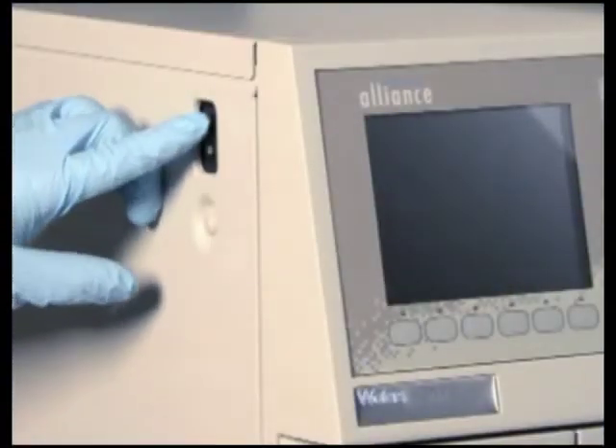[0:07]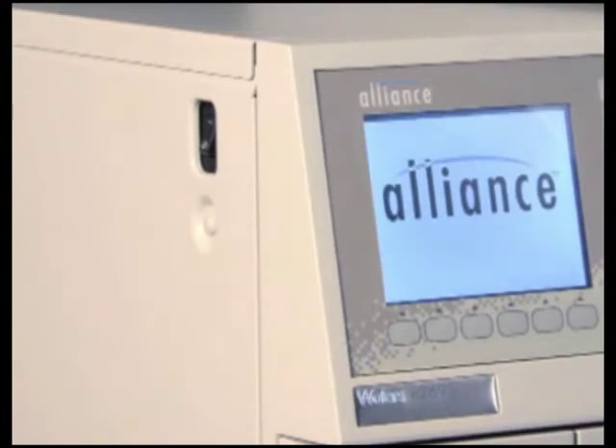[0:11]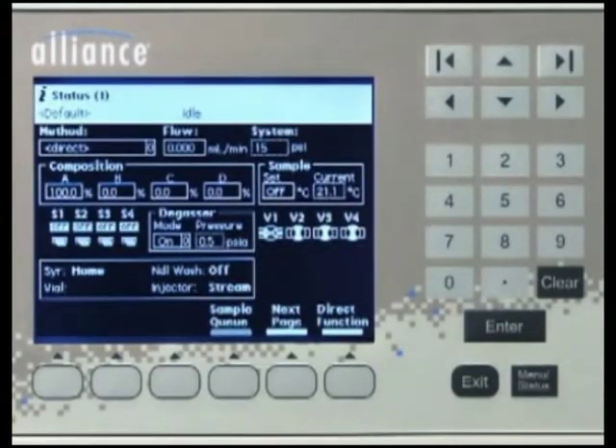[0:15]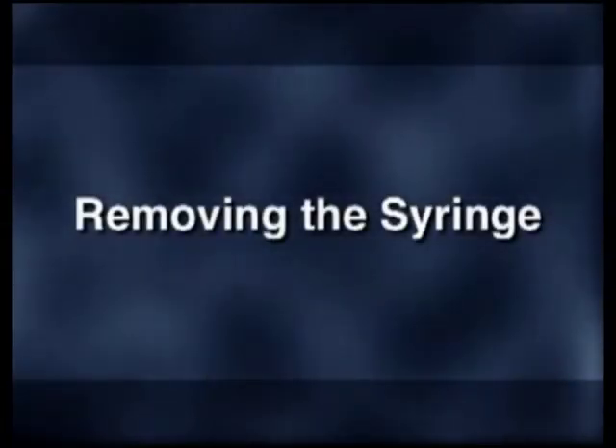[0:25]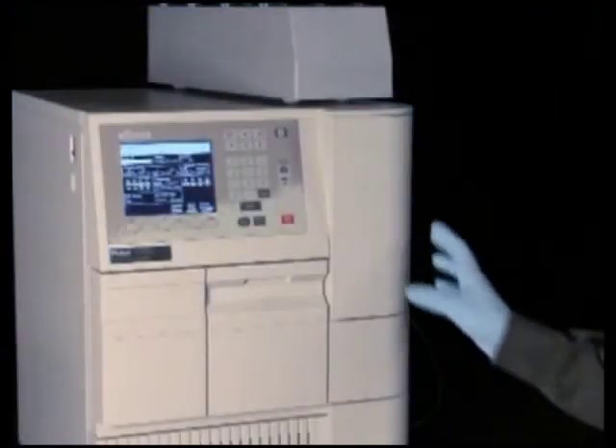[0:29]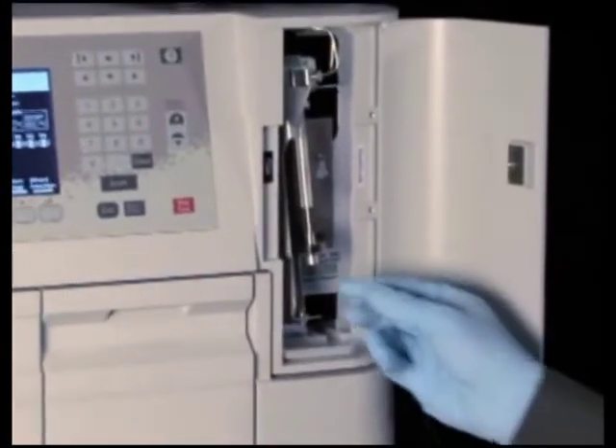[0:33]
Turn the 2695 separations module on. Press the menu status key to access the status screen and check to make sure the solvent flow is off and that there is no back pressure in the system. Open the syringe compartment door. Remove the knurled knob from the end of the syringe plunger.
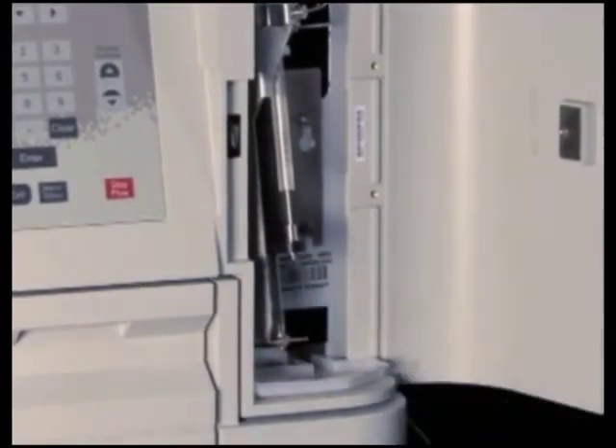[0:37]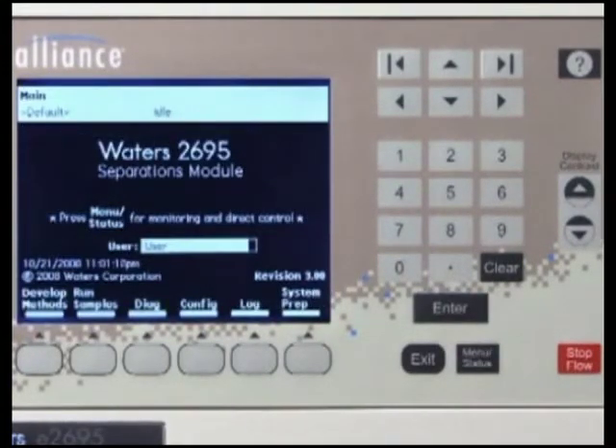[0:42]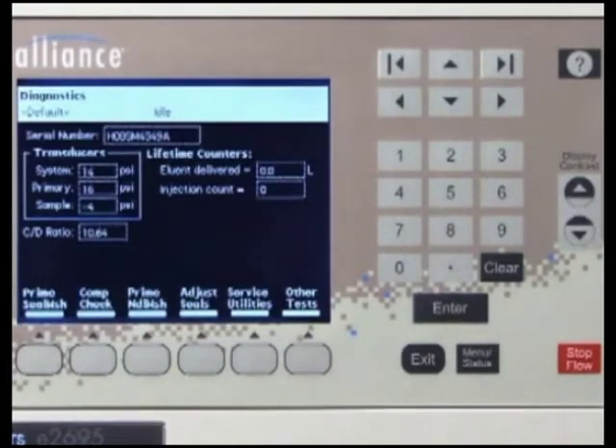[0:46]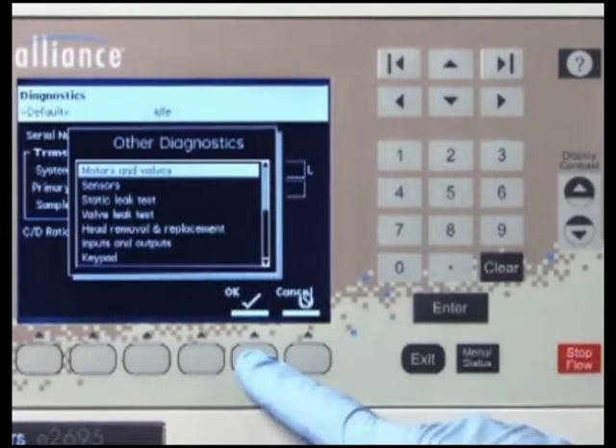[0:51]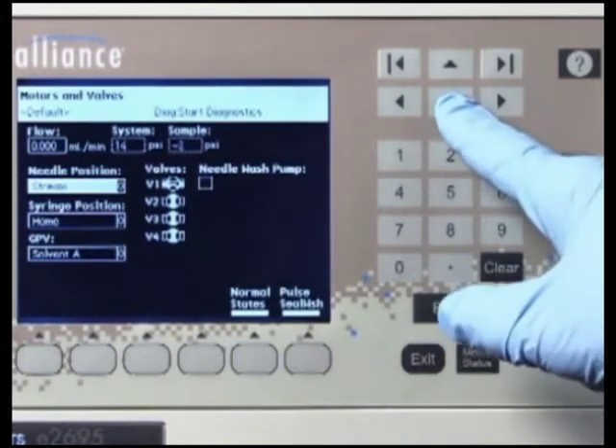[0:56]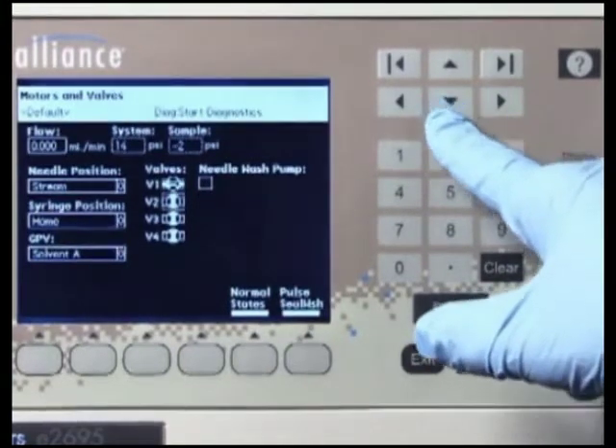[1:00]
Press the menu status key to return to the main menu. Then press the diagnostic screen key. Press the other test screen key and select motors and valves from the list of available tests. Press the arrow keys to select V3. Verify that the V3 valve is open. If it is not, press any numeric key to switch the valve to the open position.
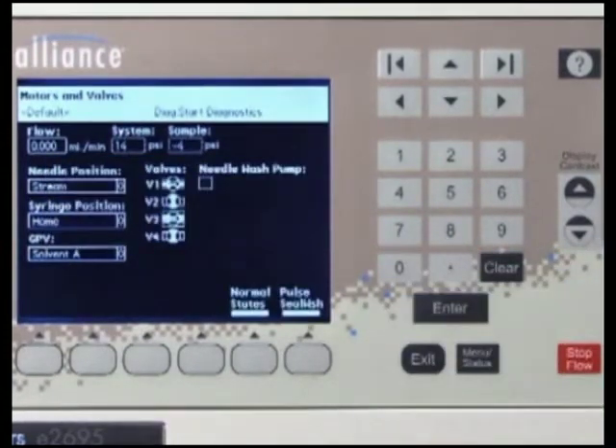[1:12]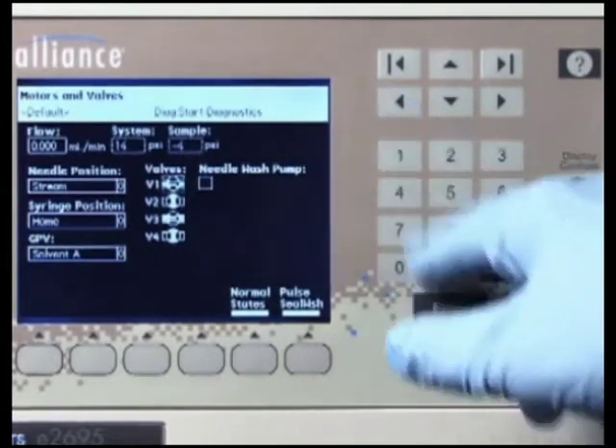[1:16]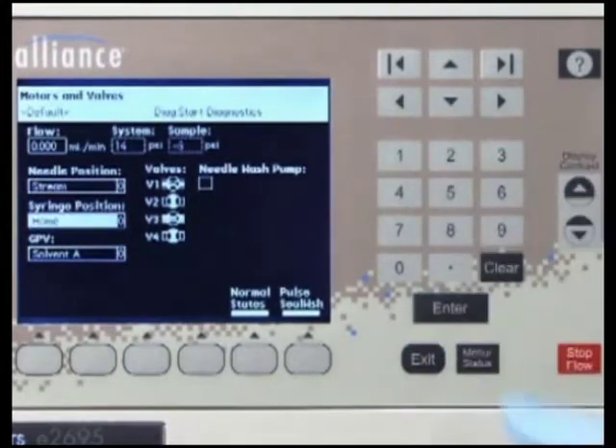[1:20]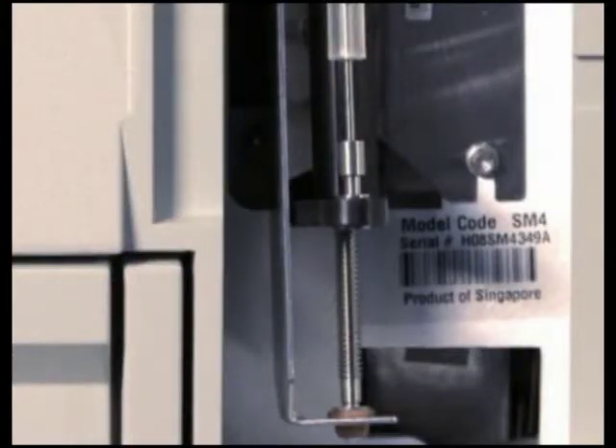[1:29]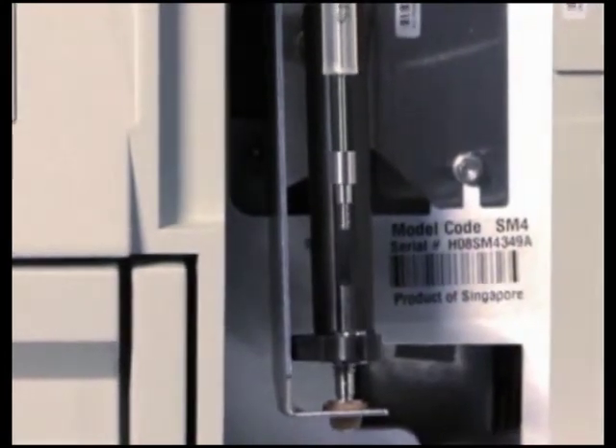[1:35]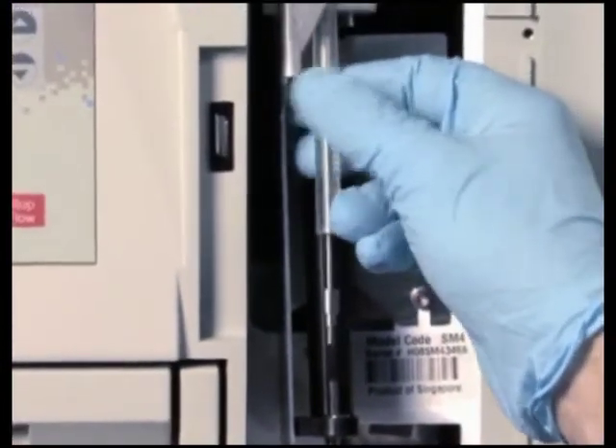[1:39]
Select the syringe position field. Press Enter to display the drop-down list. Select the full field. With the knurled nut removed, the plunger tip remains pointed upward as the mounting bracket is lowered. When the mounting bracket is fully lowered, unscrew the syringe from the syringe drive mounting block and remove the syringe from the compartment.
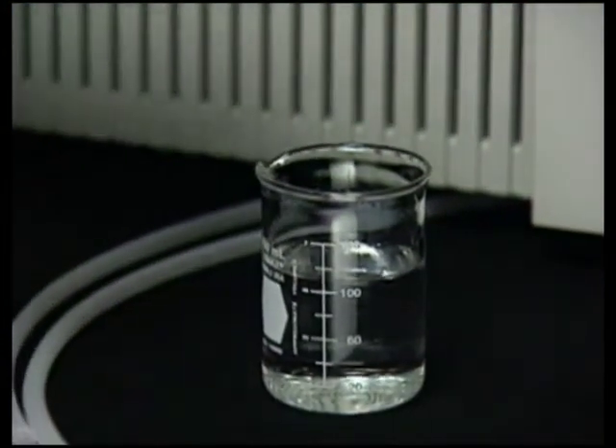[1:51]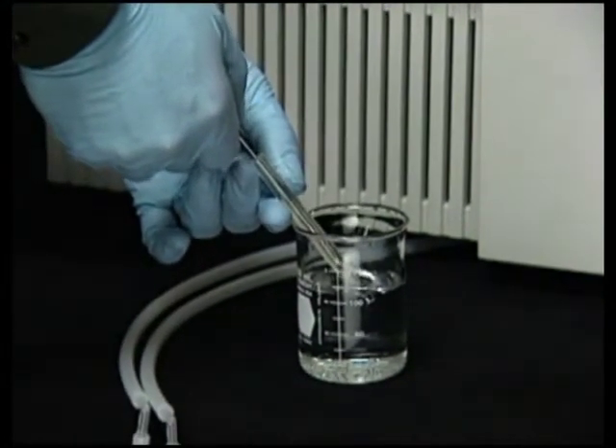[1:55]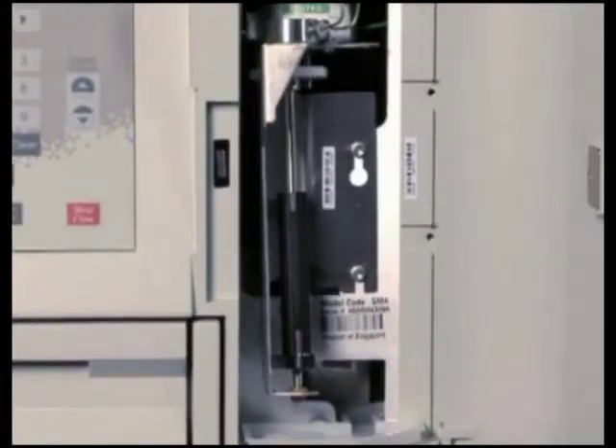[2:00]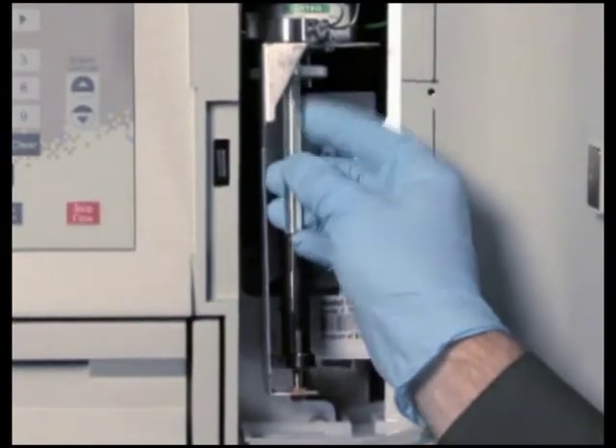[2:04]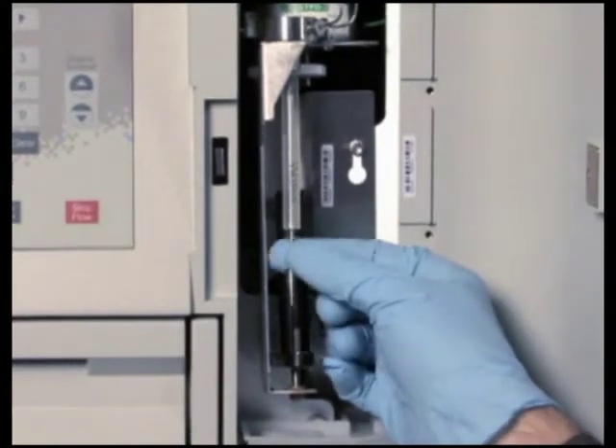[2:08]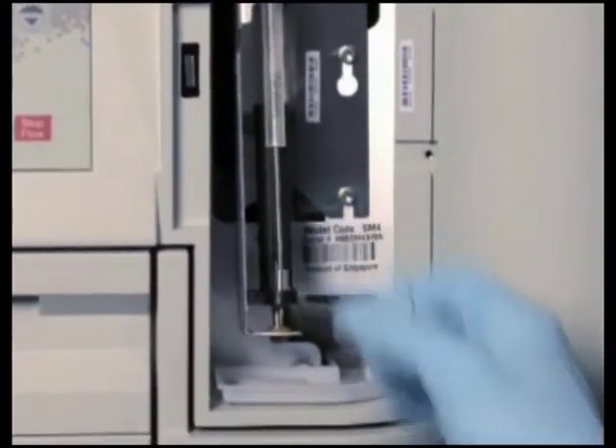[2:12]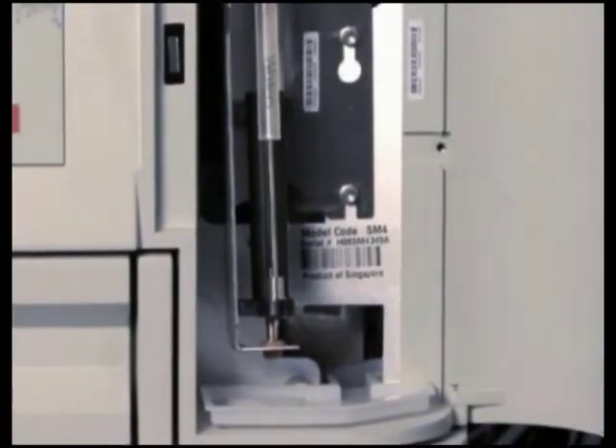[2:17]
Before you insert the syringe into the mounting bracket, partially fill the new syringe with mobile phase to help remove air bubbles. Screw the new syringe partially into the syringe drive mounting block. Do not tighten. Slide the syringe plunger down and insert the end of the plunger through the syringe guide bracket. Now tighten the syringe into the mounting block.
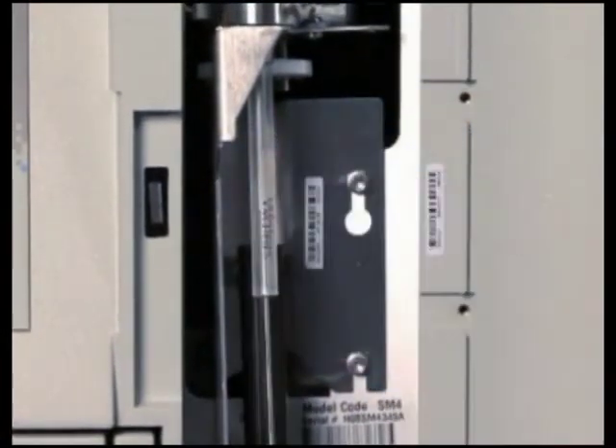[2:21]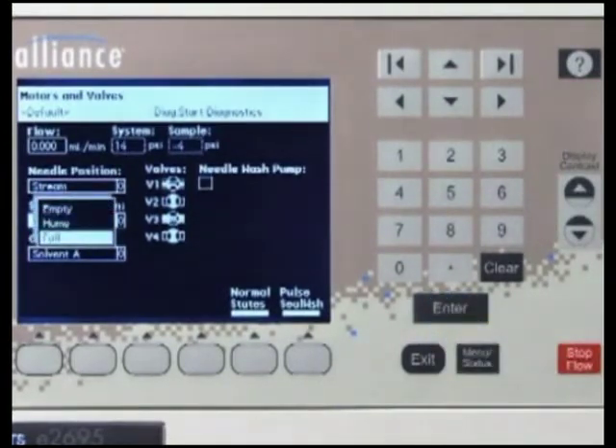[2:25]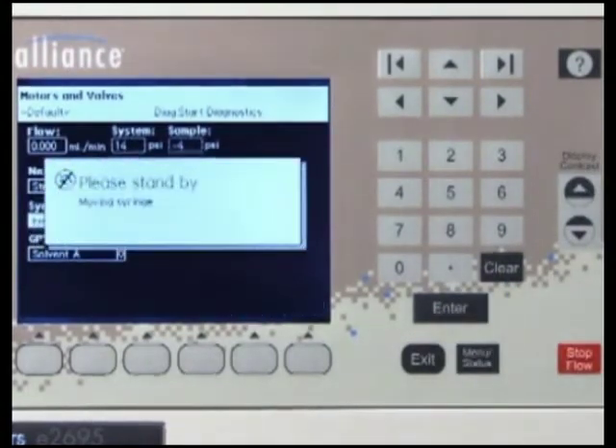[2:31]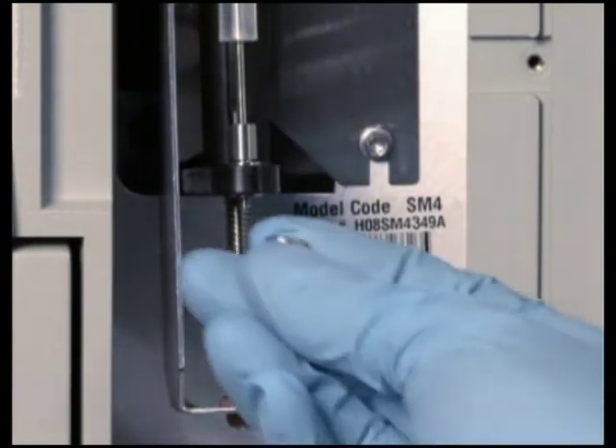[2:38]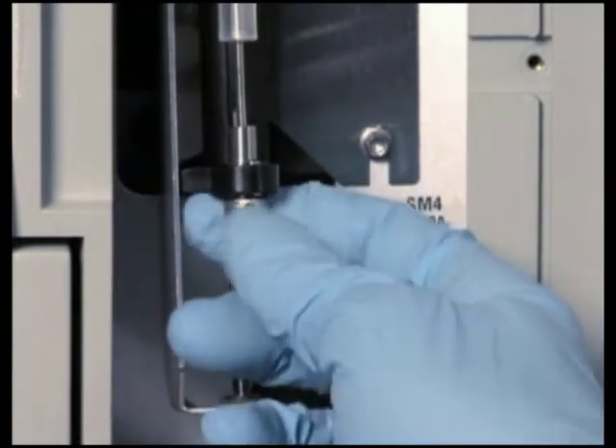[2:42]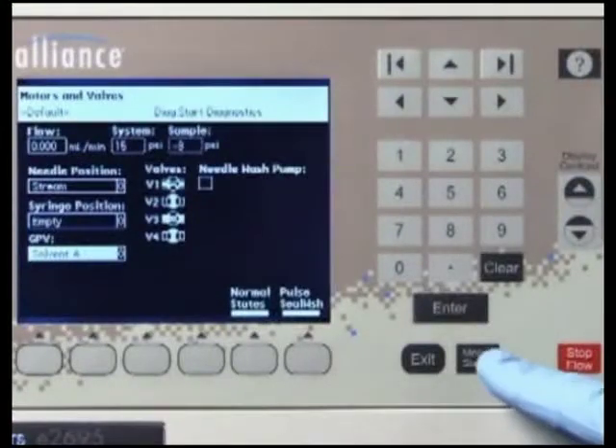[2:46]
In the syringe position field, press Enter to display the drop-down list. Select Empty, and then press Enter. The mounting bracket moves upward so that you can install the knurled nut. Fasten the knurled nut. Press Exit to exit the motors and valve screen to return to normal conditions.
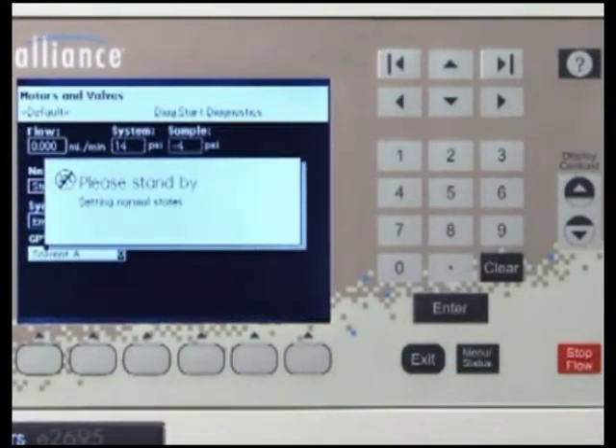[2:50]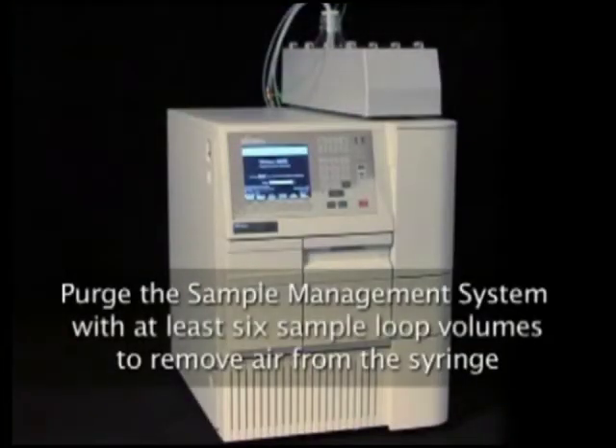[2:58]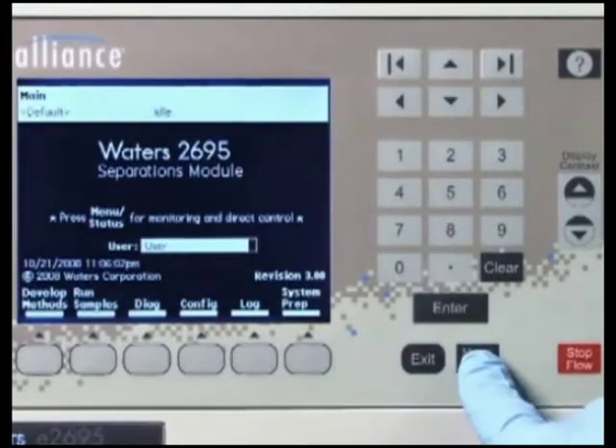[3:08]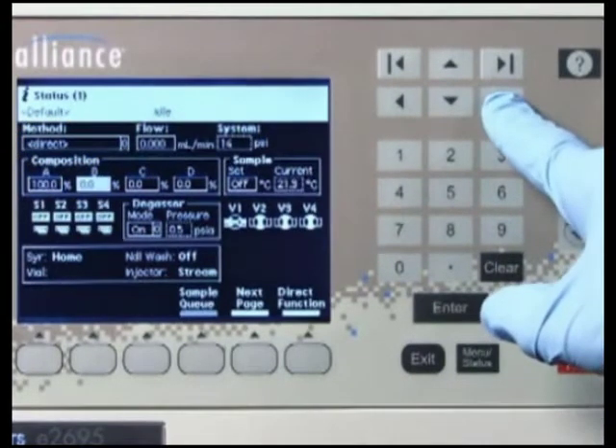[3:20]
Once you have installed a new syringe, purge the sample management system with at least 6 sample loop volumes to remove any bubbles that may exist in the system. To perform the purge, press the menu status key to display the status screen. Then verify that Direct appears in the method field. Set the pump to deliver 1 milliliter per minute of 100% degassed mobile phase.
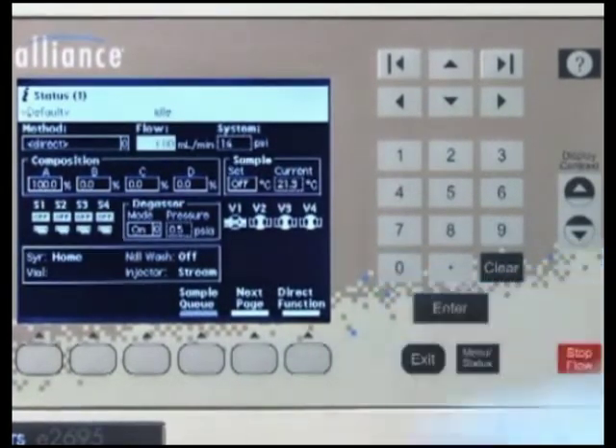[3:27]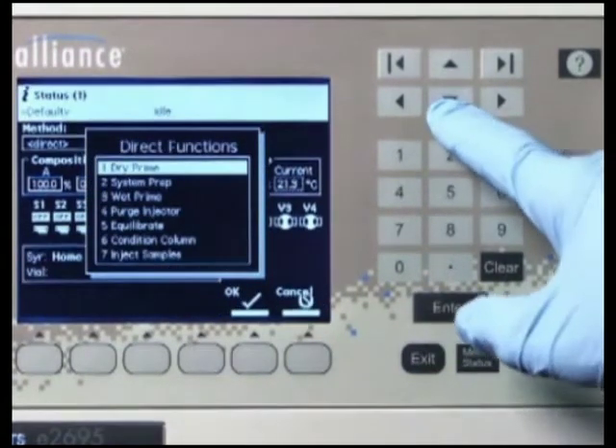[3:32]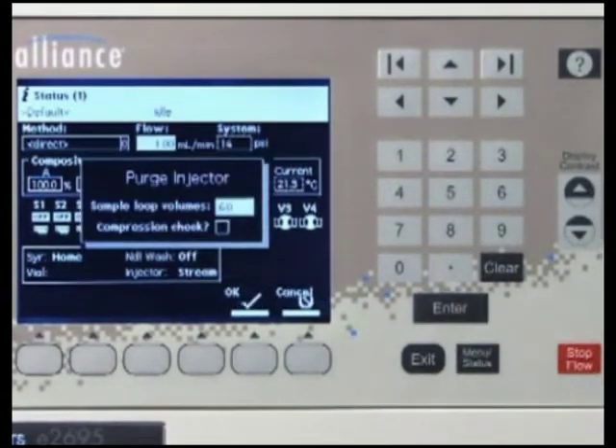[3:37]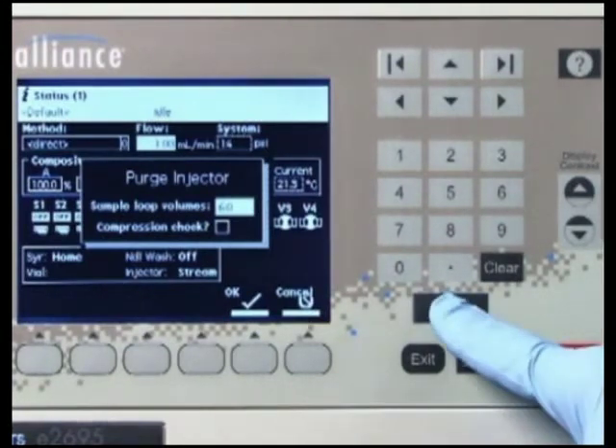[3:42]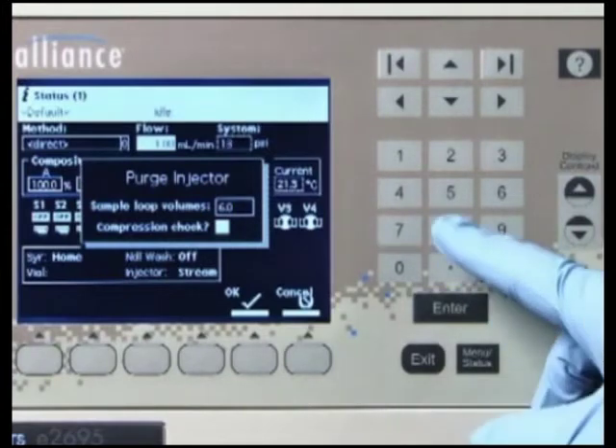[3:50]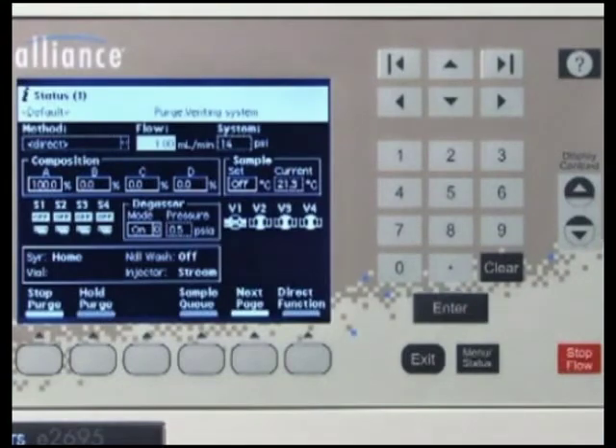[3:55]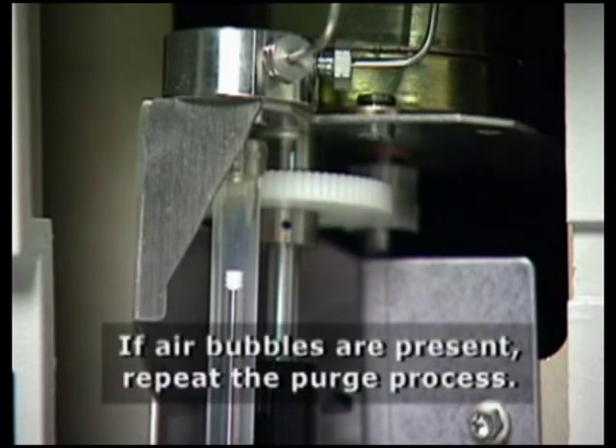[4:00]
Next, press the Direct Function screen key. Select Purge Injector, then press Enter. In the Number of Sample Loop Volumes field, enter 6, then press Enter. To check for air bubbles in the syringe, select the Compression Test checkbox to perform a compression test. Finally, press OK to start the purge cycle. When the cycle is complete, look to see that there are no air bubbles in the syringe. If air bubbles are present, repeat the purge process.
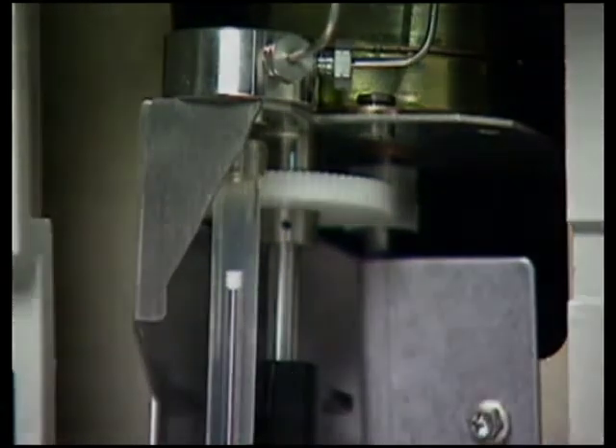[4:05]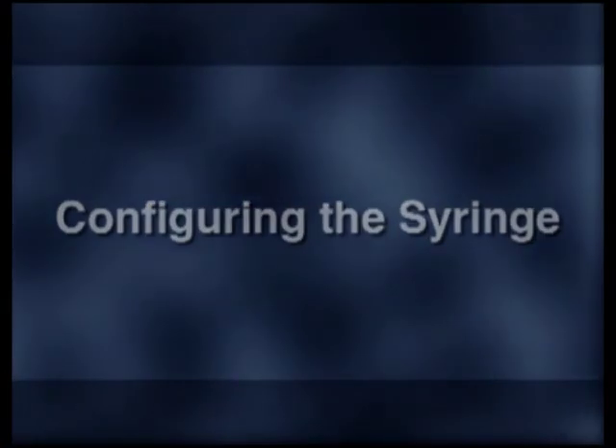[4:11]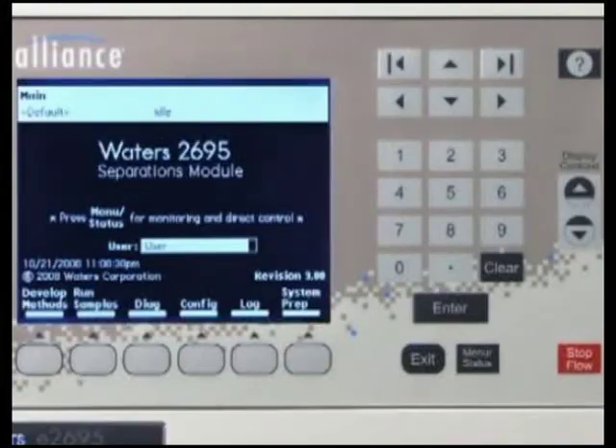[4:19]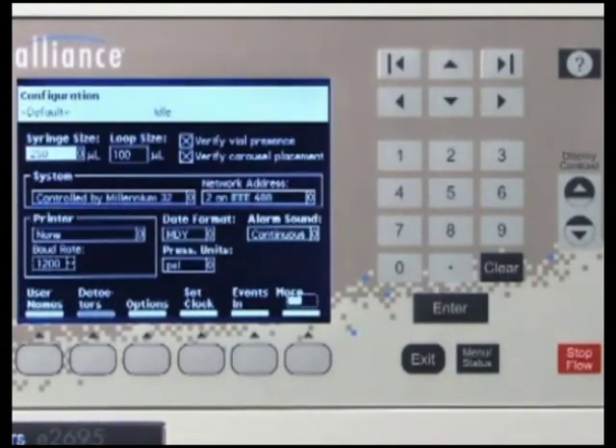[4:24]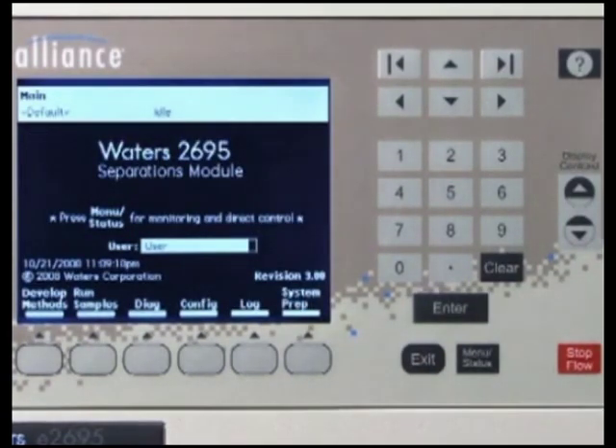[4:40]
If the syringe you installed is a different size, you must change the syringe size on the configuration screen. To do this, press the Configure screen key on the main menu to display the configuration screen. The syringe size field is highlighted. Press Enter and use the arrow keys to select the correct syringe size, then press Enter. Press the Exit key to return to the main menu.